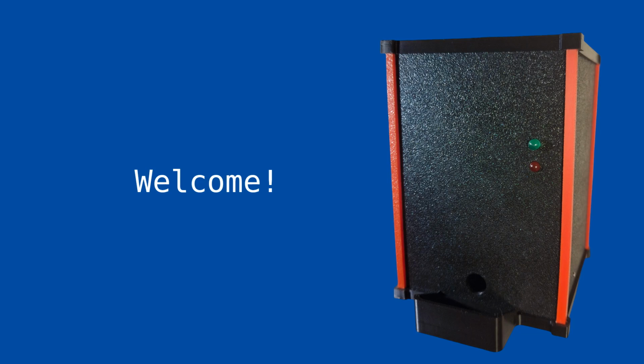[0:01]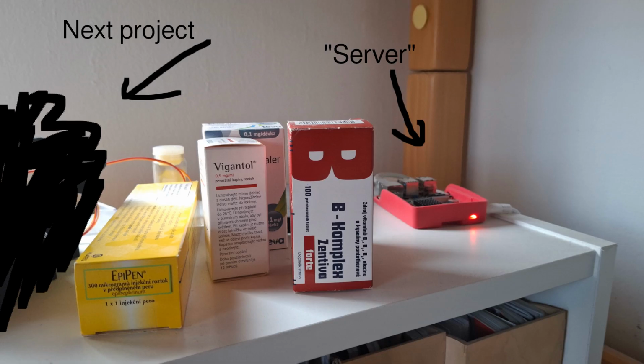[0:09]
Welcome. As you could see from the thumbnail, today I would like to share a story about how I built a pill dispenser. The idea for this project came to me while I was cleaning the shelves next to my
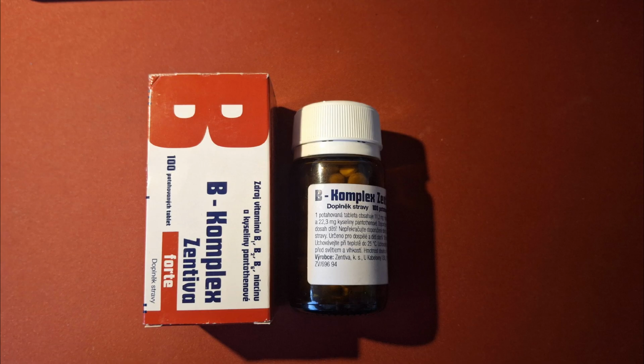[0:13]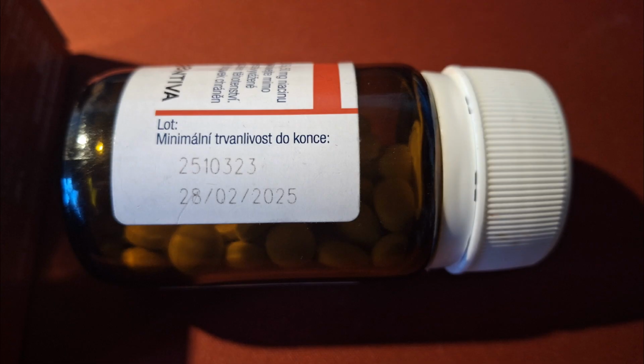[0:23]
desk. On one of the shelves, there has been a bottle of vitamins sitting there for a long time. Vitamins I was supposed to be taking every day for the last 2 years. Now, if you are wondering whether I have actually been taking them, the answer is no. They are out of my sight, so I always forget. So, by making this, I could keep them in view and within easy reach.
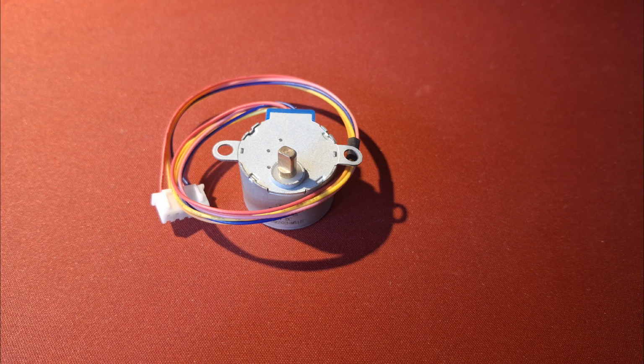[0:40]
First, I had to come up with some constraints. This was meant to be just a prototype, a fun weekend project. For now, I'm using a 28BYJ-48 stepper motor, but for the second version I bought a different motor.
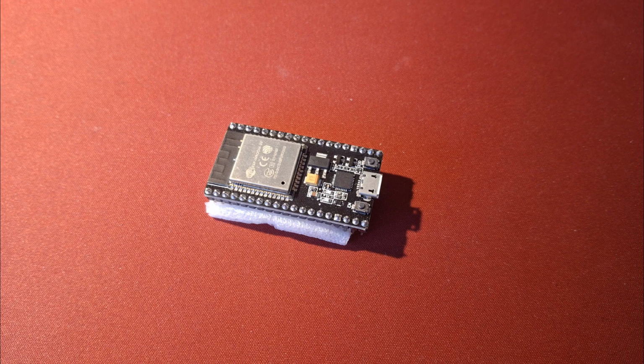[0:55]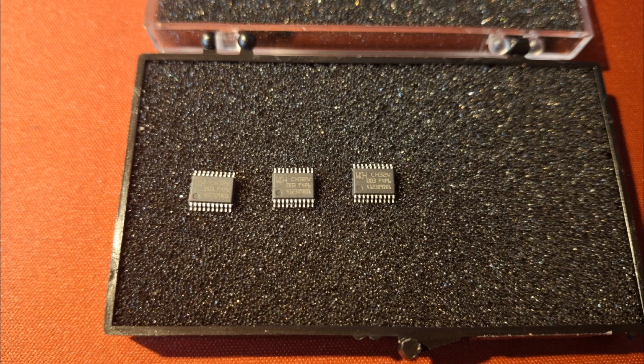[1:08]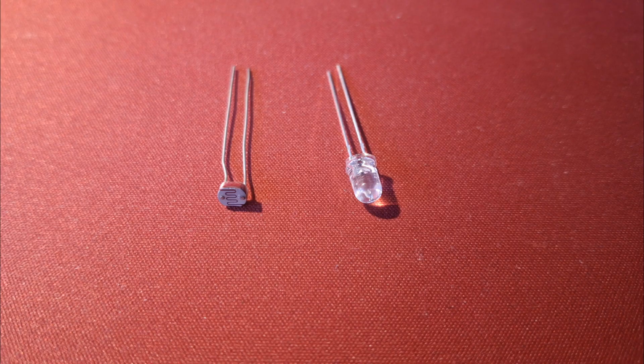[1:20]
Next on the list was choosing an MCU. Sure, I could use an ESP and make it smart, but do I need to? A pill dispenser with Wi-Fi? Seems like overkill. It would just waste power for no real benefit. So I chose the CH32V003. It's a kinda new, famous MCU based on RISC-V, and I have been waiting to try it for a while. There weren't many other requirements, I just wanted to use a photodiode to sense when the pill was dispensed.
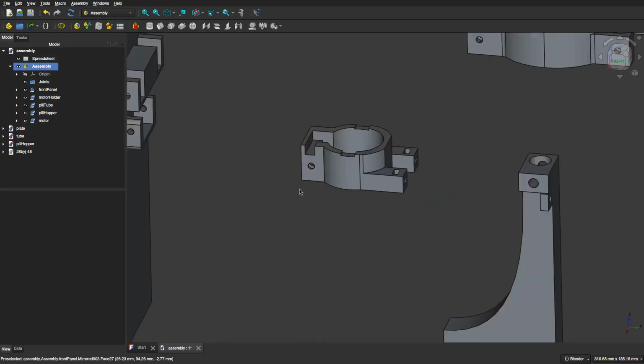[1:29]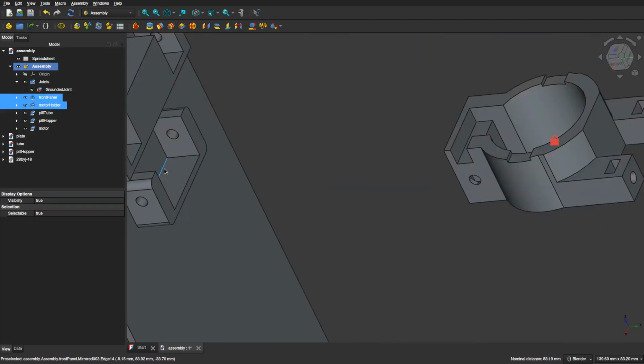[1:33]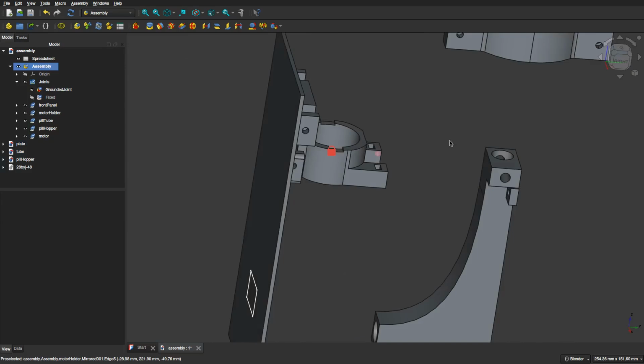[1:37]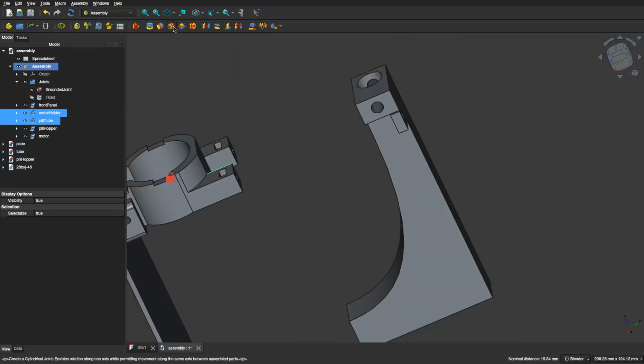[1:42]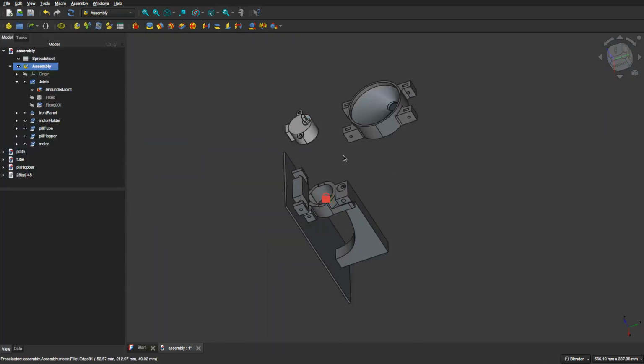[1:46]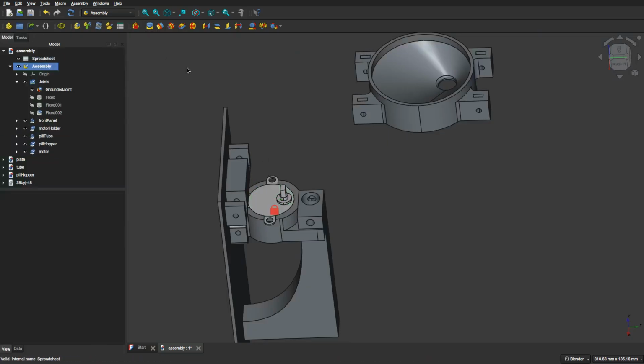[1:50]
As always, I use FreeCAD, but this time I decided to use assembly while modeling. Before, I just positioned all my parts based on spreadsheet values, but this time I wanted to do it better. After some research, I landed on using FreeCAD's built-in assembly. After a bit of practice, I got the hang of it, but it was very frustrating to use.
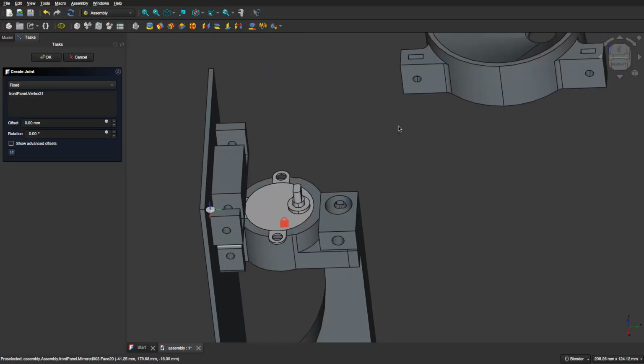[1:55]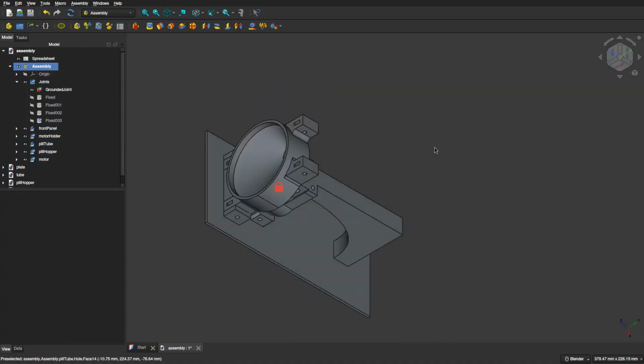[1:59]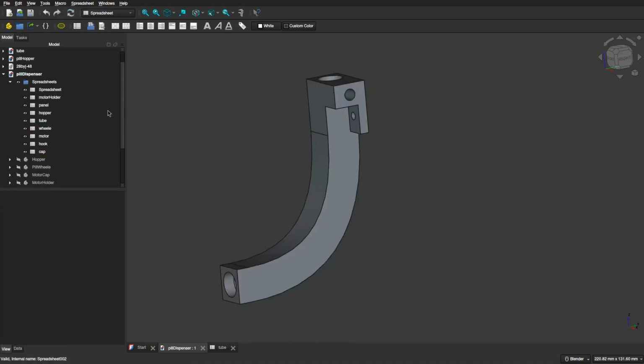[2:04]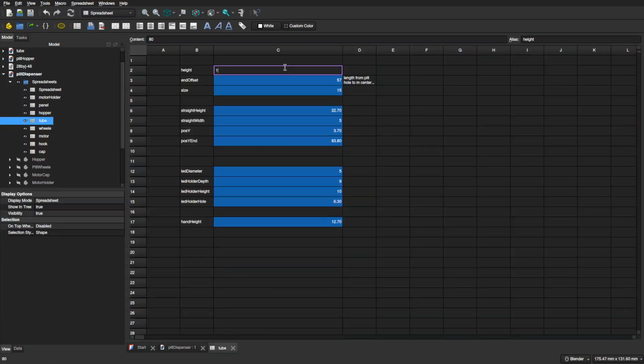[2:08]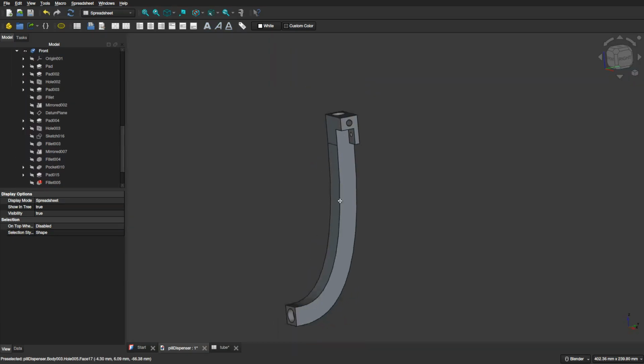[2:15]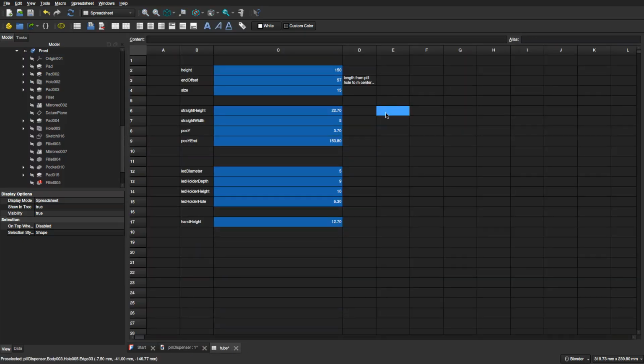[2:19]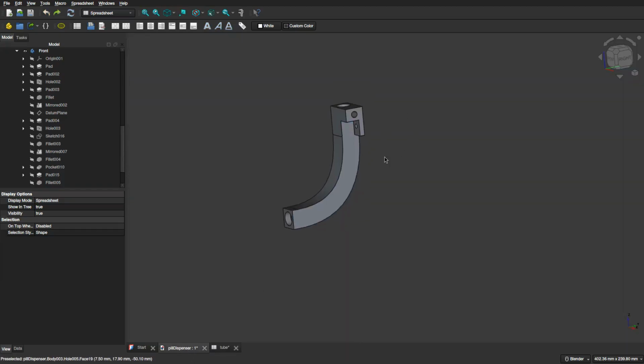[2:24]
Sometimes it just crashed and a few times it crashed horribly, so badly that the project file got corrupted and I had to go back and use backups. There is a high probability that I was using it wrong, but in the end I figured that I still like having all parts controlled by spreadsheets much more. And even when the project gets bigger and slower, I still like this way much more. I would like to try assembly again somewhere in the future, but for now this is more than perfect.
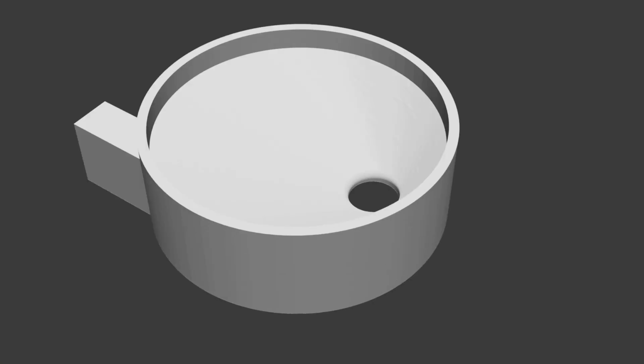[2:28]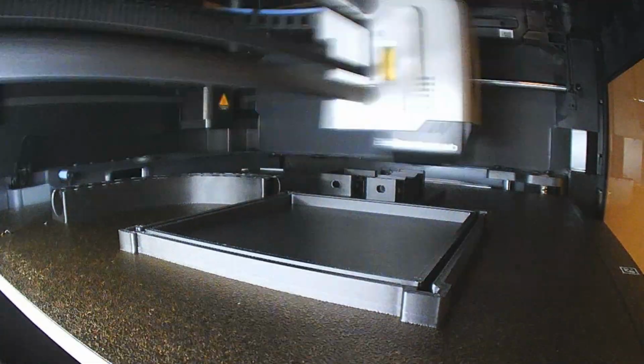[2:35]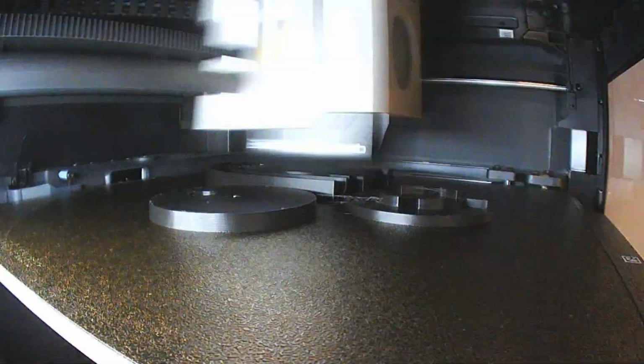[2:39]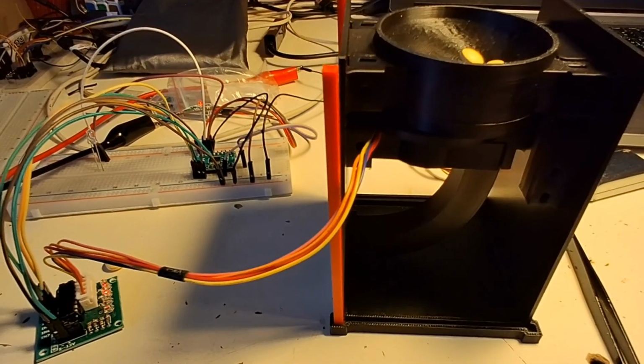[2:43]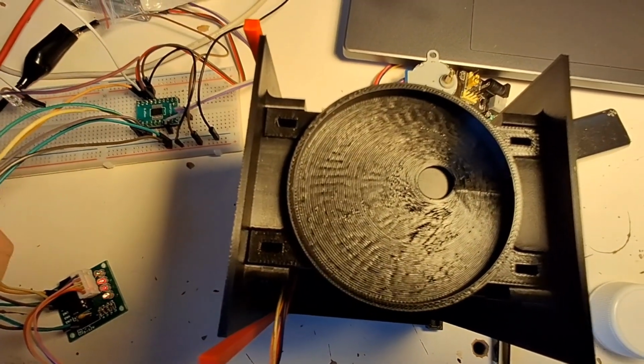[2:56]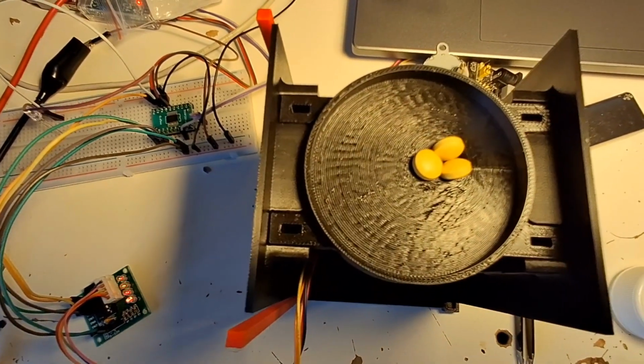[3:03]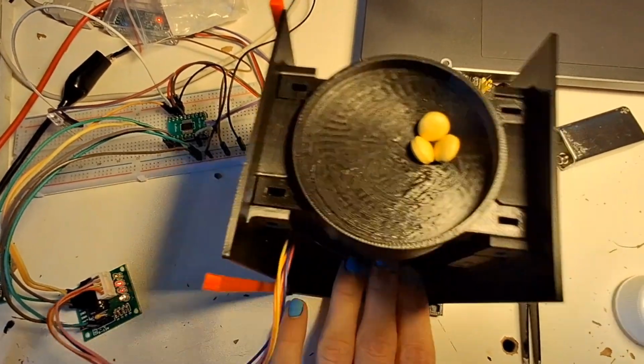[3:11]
Next, I had to print all parts, assemble them, and write some code so I could test the first prototype. Everything went smoothly until my biggest concern became a reality. When I placed more pills in the hopper, it got stuck. Additionally, the pill wheel only had one hole, and I realized that adding more holes would allow it to dispense pills much more quickly.
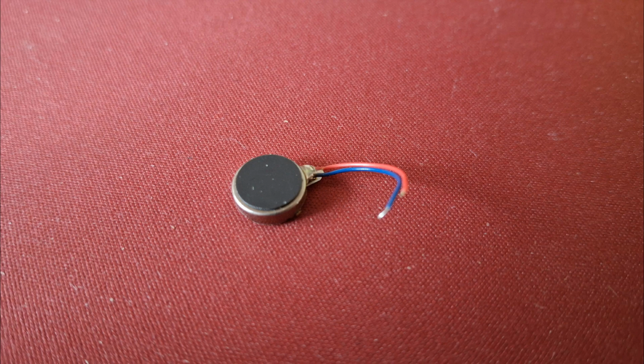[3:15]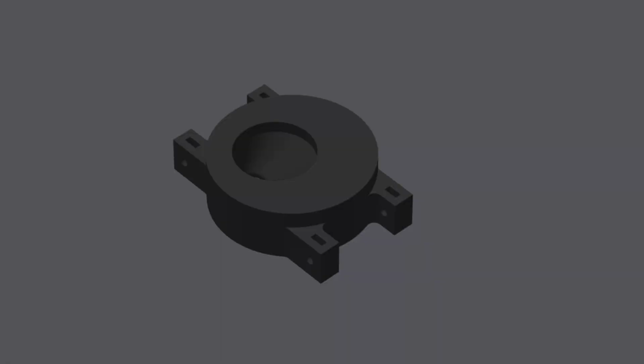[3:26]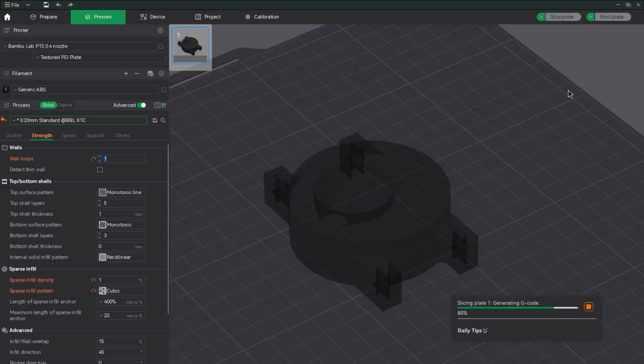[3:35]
One of the options that I had is to put a small vibrating motor in the hopper that could prevent the pills clogging. The other mechanical solution was just to make the hopper better. So I tried to test the idea of having a hopper with a much steeper edge, so I made this abomination. I sliced it with the lowest possible infill and walls and printed it.
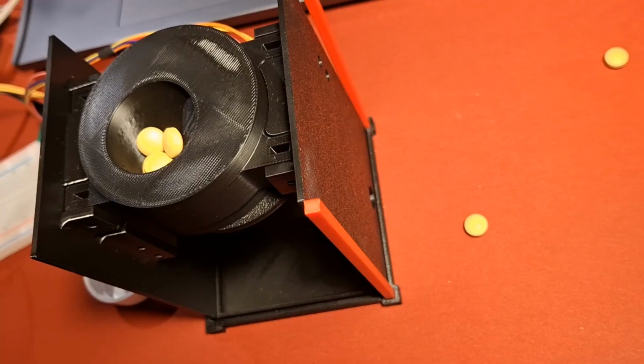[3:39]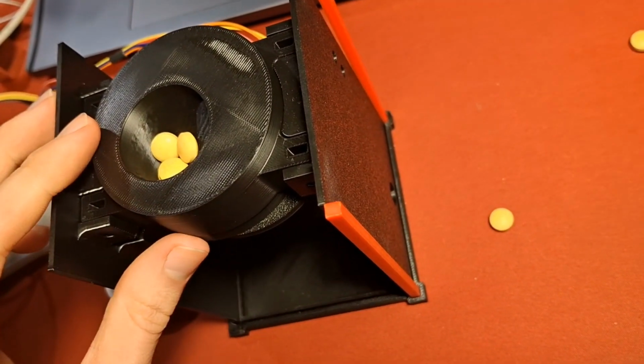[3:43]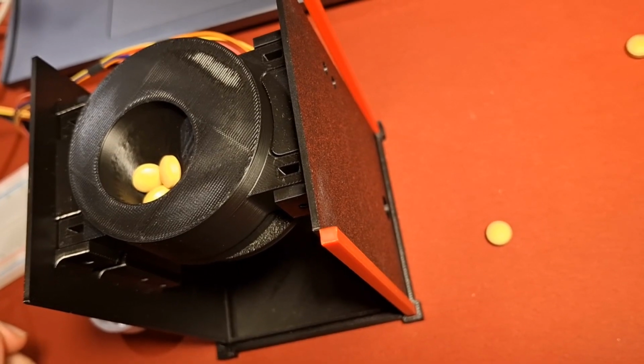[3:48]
Unfortunately, this still had pills clogging up. Looking around, usually other working hoppers are much taller and also have a much taller converging path, so I left the idea of using a real hopper.
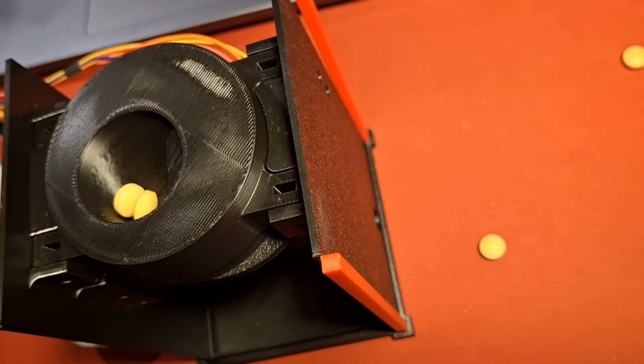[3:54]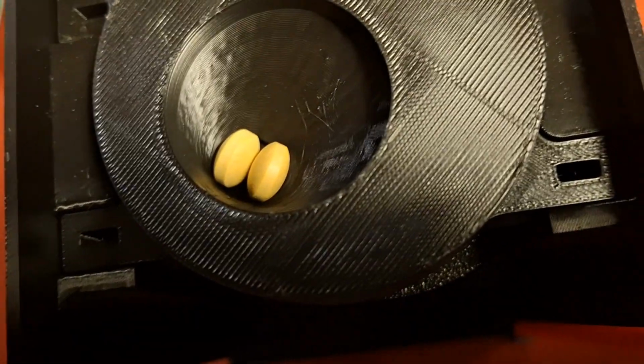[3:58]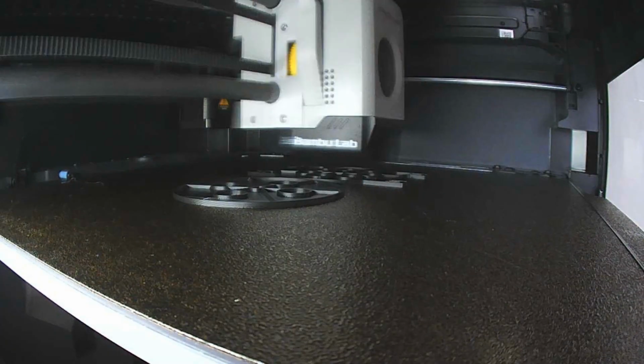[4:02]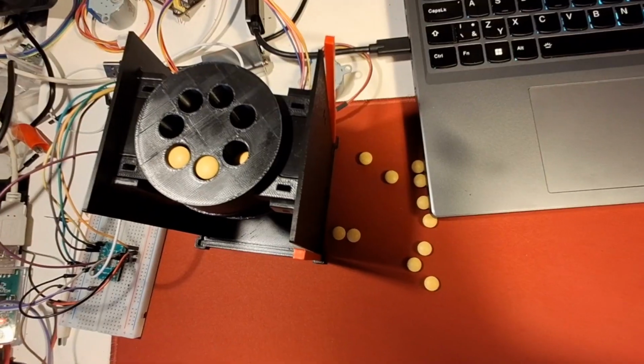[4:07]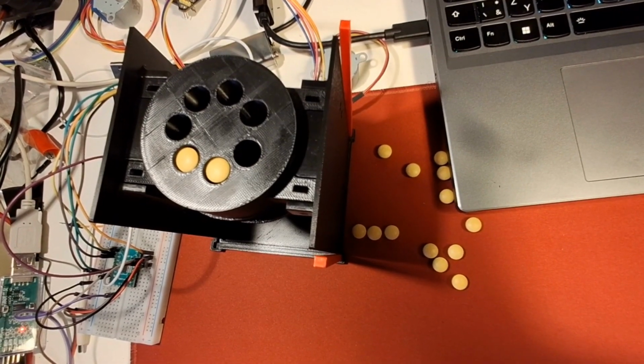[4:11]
Another mechanical solution was just to make holes for the vitamins where they will be stacked on each other. This solution turned out to be much better than I expected, but I was still a little bit disappointed that it's not a real hopper.
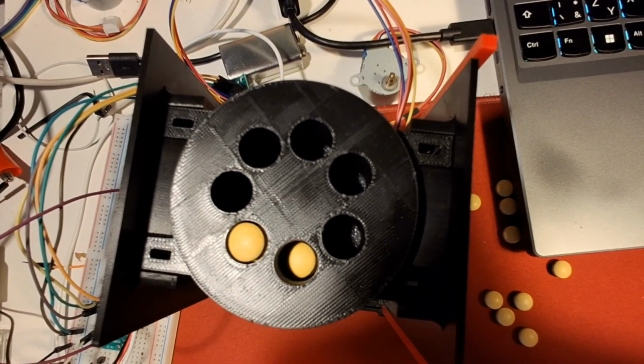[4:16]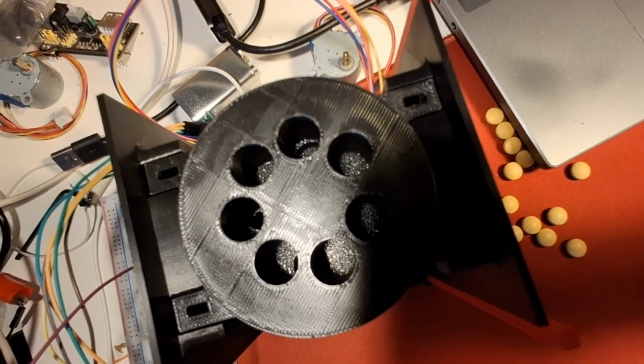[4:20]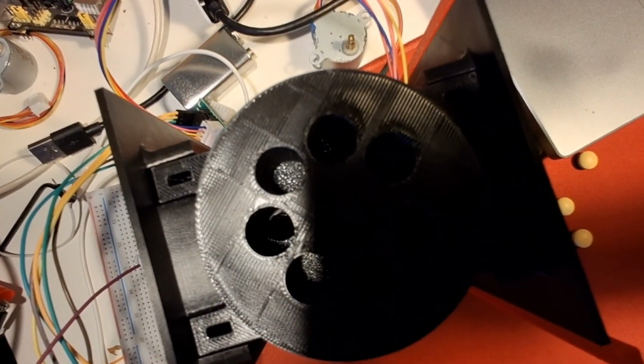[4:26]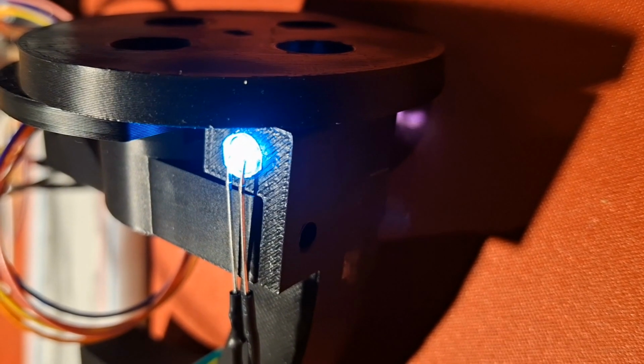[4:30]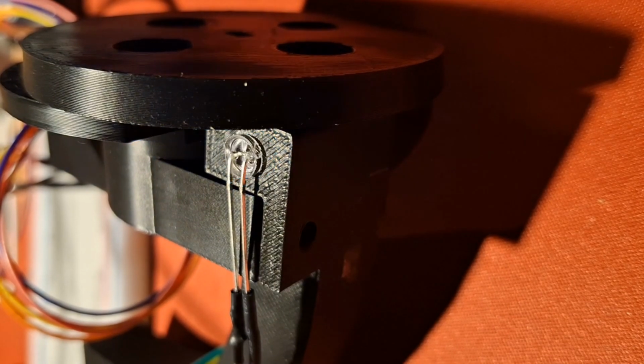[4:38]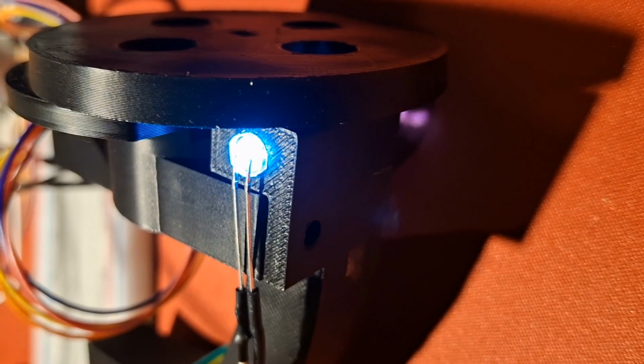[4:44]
The next step was to ensure that only one vitamin could be dispensed at a time. A pill was considered dispensed when it fell and interrupted the beam of light hitting the photodiode. The one little problem was that for monitoring changes in the photodiode's readings, I needed to have much better code.
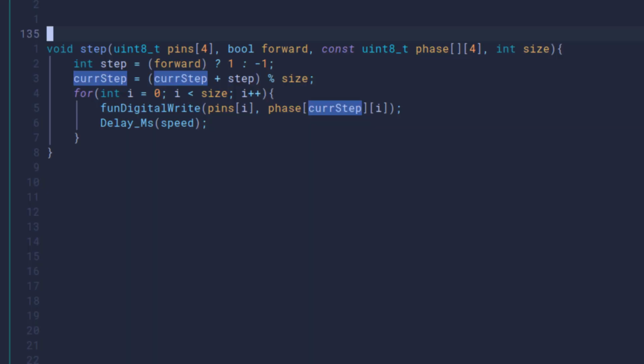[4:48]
The horrifying way I have been controlling the stepper motor did not allow me to detect the change on the photosensor, because one motor step was just looped with sleep. While using sleep, I was wasting a lot of time when the MCU could be doing something better. The correct solution would be just to use hardware timers.
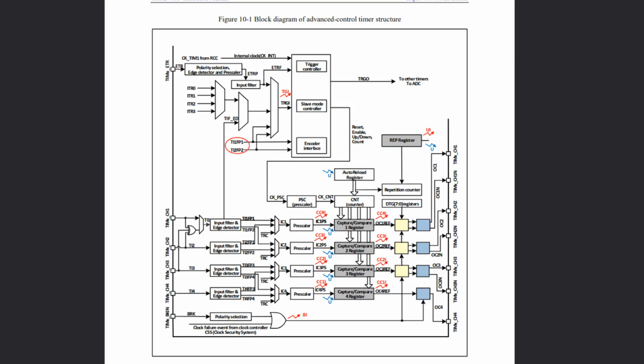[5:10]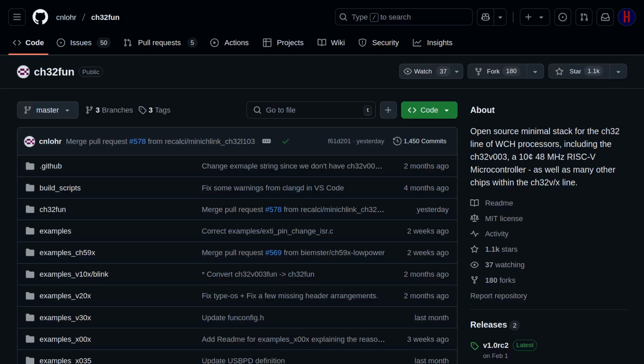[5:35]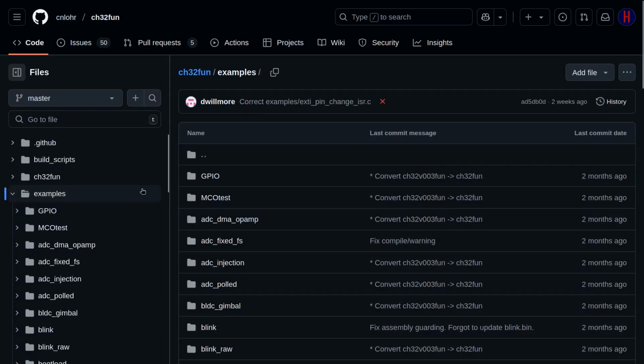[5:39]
Very simplified, a hardware timer is a specialized part of the circuit that is inside our MCU, and its sole purpose is to count clock signals. When the current clock count reaches a certain value, it does something, such as triggering an interrupt that will run our predefined function. Because this was the first time using this MCU, I had zero experience how to make it work. Also, unfortunately, in the MCU examples, I could not find any code example for how to use the timer the way I wanted to.
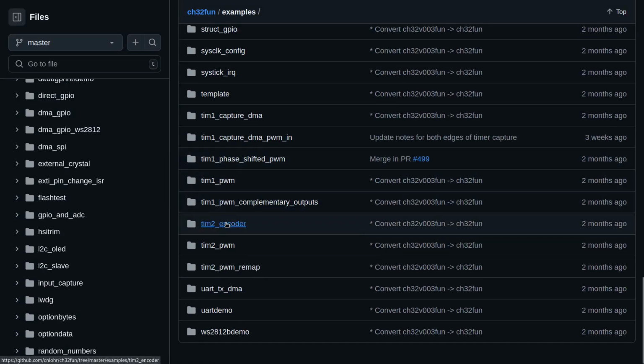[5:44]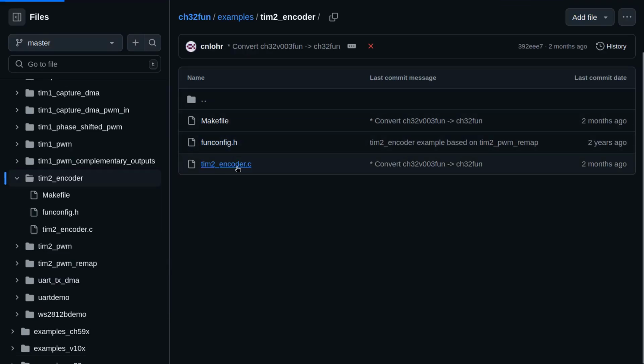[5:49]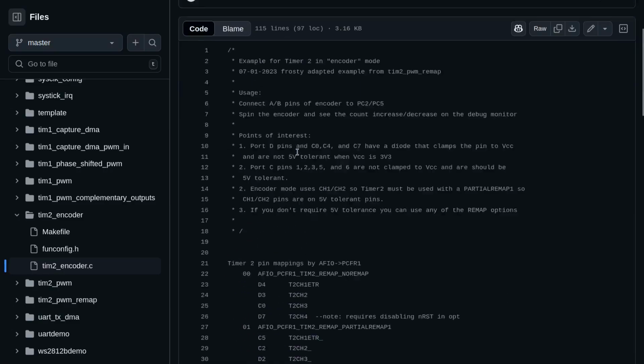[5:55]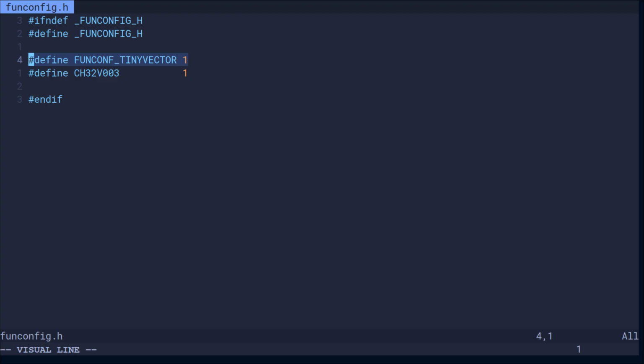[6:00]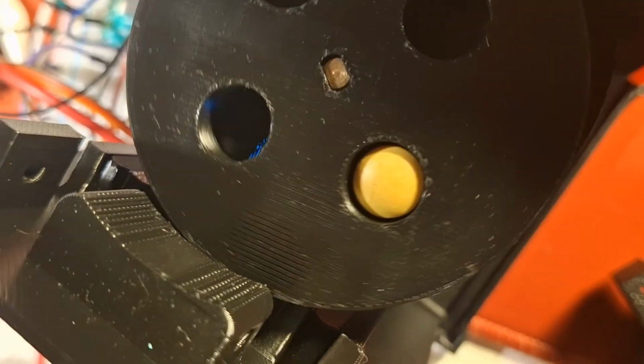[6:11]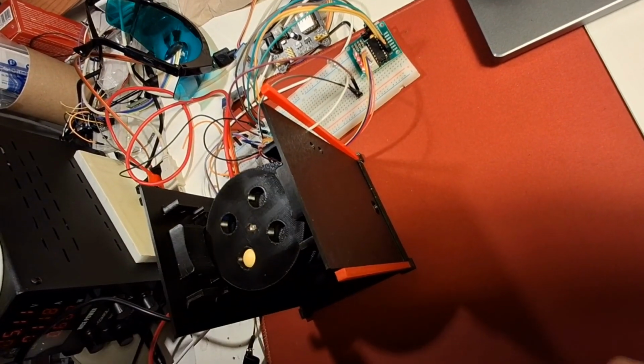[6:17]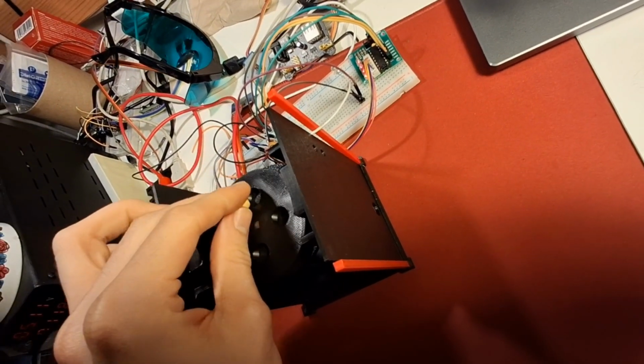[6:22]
So after a lot of hours of trying different timer settings and reading the docs, it still didn't work. But one weird thing was that I could not make any timers work in this project, even when the same code worked in different example projects. Then I got the idea to look into the config file, and there it was. For some reason there was a setting which disabled any use of interrupts. So, after changing that, timers were finally working. Next time I will make sure to first check the settings and only after that try something else. But in the end I was happy that it was finally working.
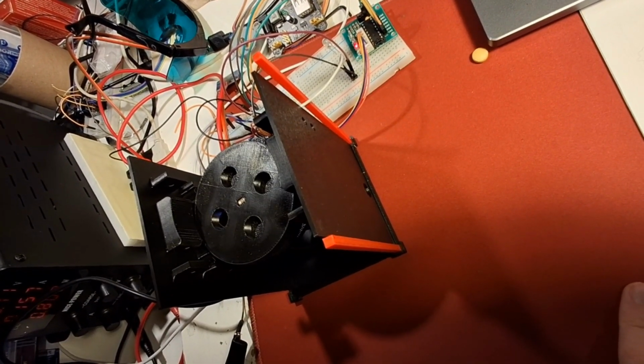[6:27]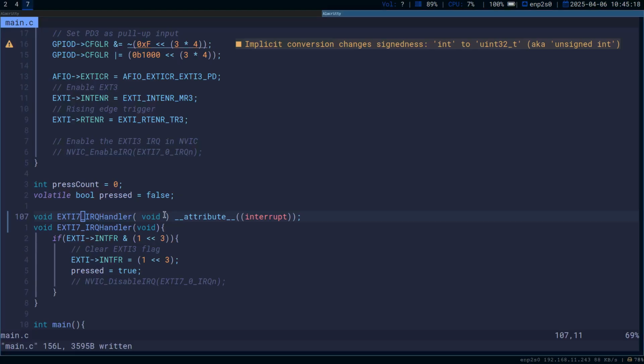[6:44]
Next fun stuff was to make the touch sensor work. Again, I wanted to use interrupts because that was the correct way to do it. And in the process I made it kinda detect the touch, and when I say detect I mean to make it crash when I touch the touch sensor. So after debugging for a while I found that I had misspelled the interrupt function, and after fixing it everything worked.
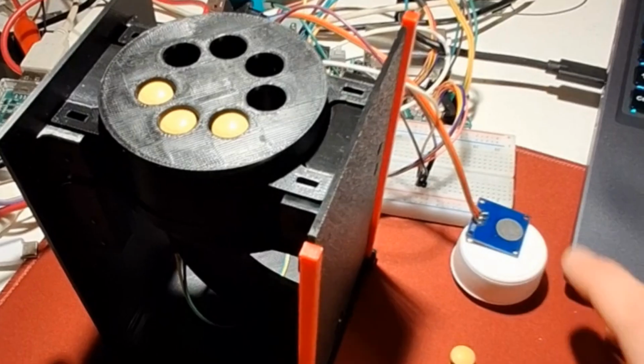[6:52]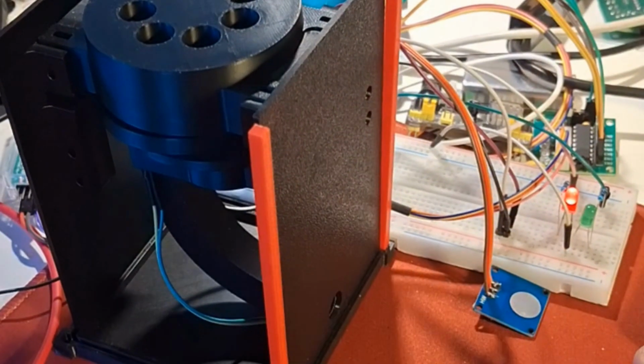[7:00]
I had also added two status LEDs. Green LED means dispensing, red means that the hopper has no more pills and it needs refill.
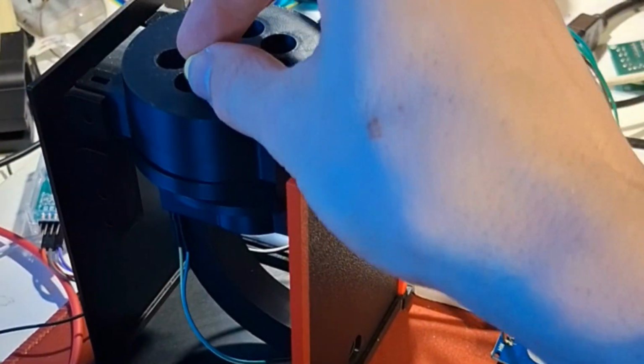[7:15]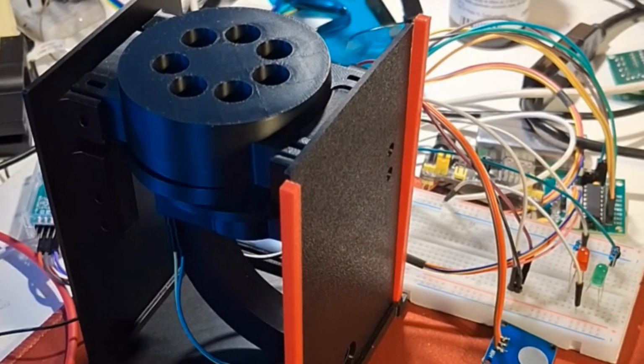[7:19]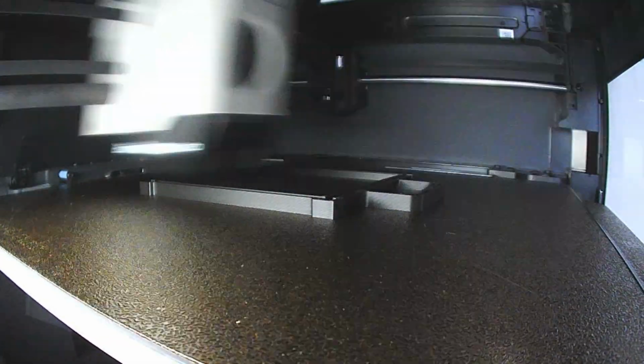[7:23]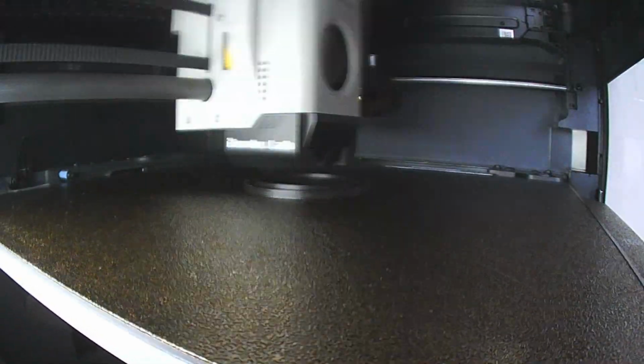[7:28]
Next I had to finalize the whole design. For example, add something that will keep the pills from falling down when dispensed, or a hole in the lid so I could easily fill it up.
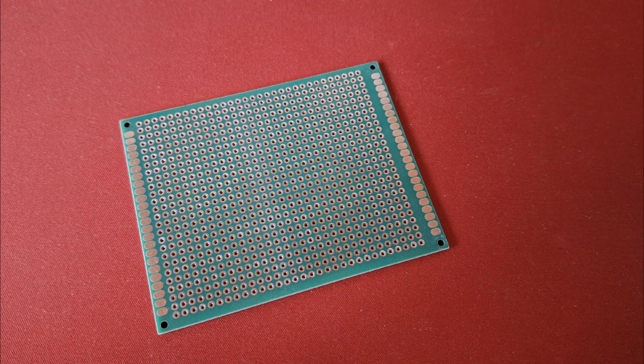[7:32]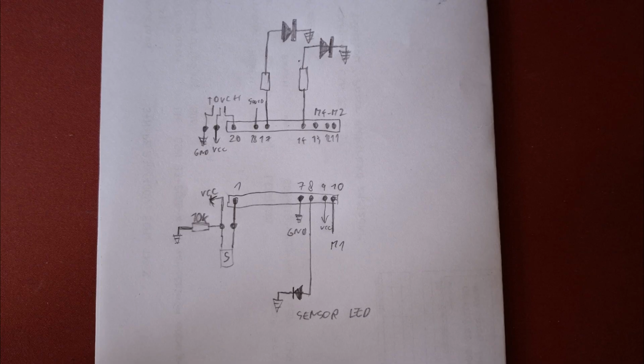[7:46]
The last task on my list seemed like the easiest, but it turned out to be the hardest and most frustrating. I couldn't use my CNC, I didn't want to order a PCB, so I had to solder everything onto a universal prototype board. The first issue came when I copied the schematic from my breadboard. On the schematic I connected a resistor to the wrong leg of the photodiode, which cost me nearly a whole day of debugging. I kept measuring voltages and swapping photodiodes until I finally rebuilt the circuit from scratch and found the mistake.
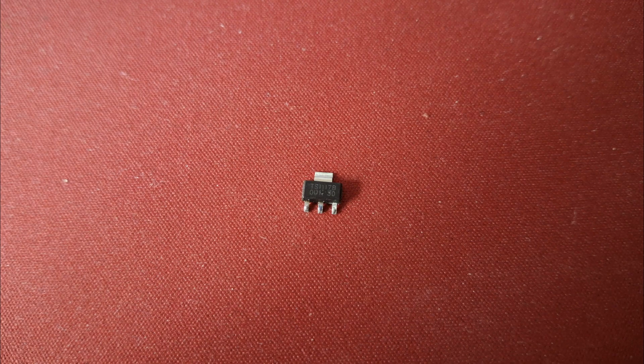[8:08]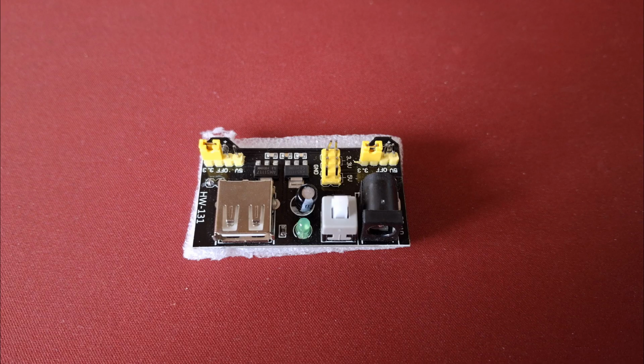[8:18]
Then I likely damaged the voltage regulator or created a solder bridge under it, and when I powered the board, the MCU released the magic smoke and died. Not wanting to waste more time, I removed the small SOT223 and used a breadboard friendly power regulator instead.
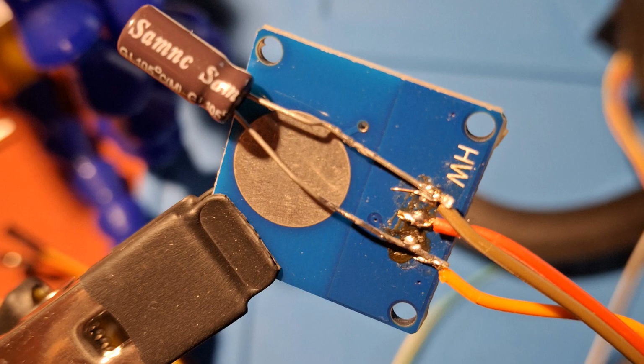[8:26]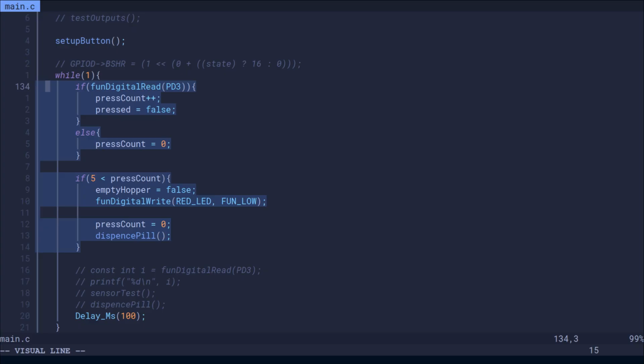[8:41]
After fixing that, the touch sensor was giving false positives. The problem was probably power noise, since it worked fine when the MCU was powered through the programmer. Adding a capacitor helped a bit, but it still wasn't reliable. The final fix was to remove the interrupt and only register a press if the sensor stayed active for over half a second. That worked perfectly.
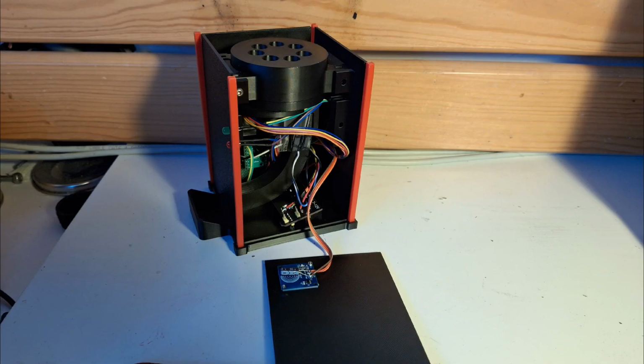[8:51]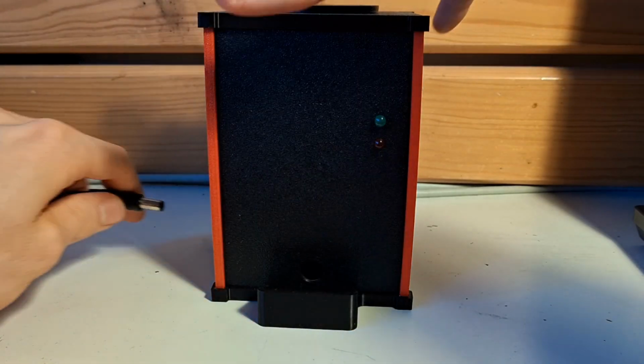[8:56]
This is how it looks inside. And here is some rare footage of it actually working all together.
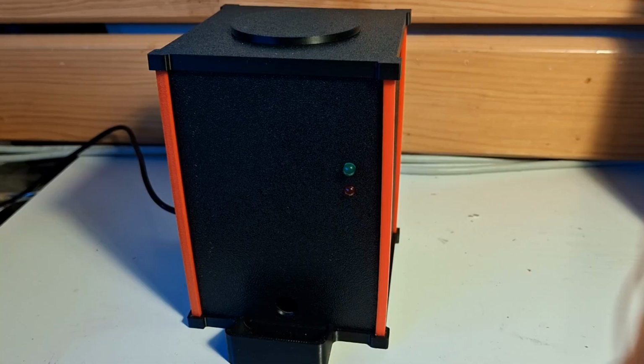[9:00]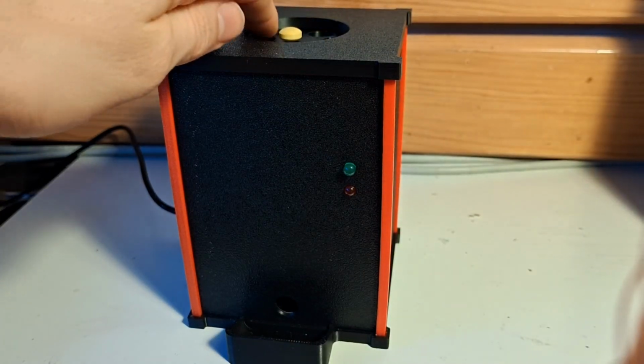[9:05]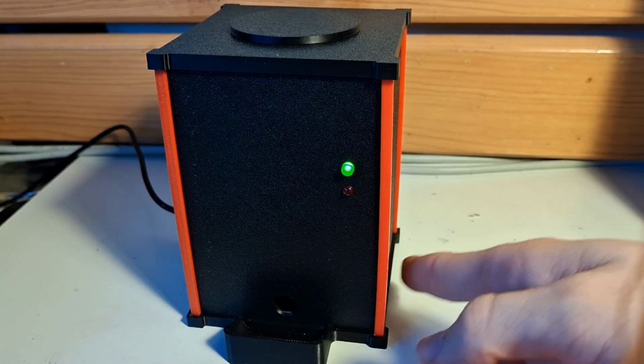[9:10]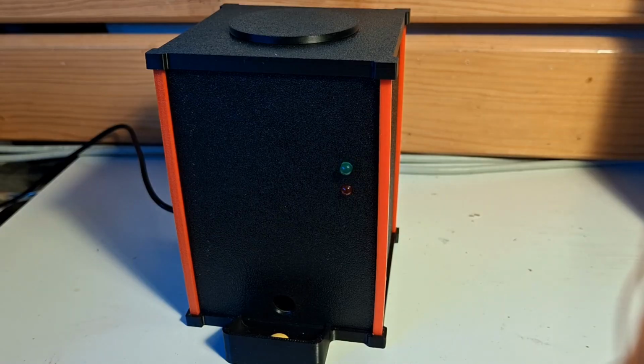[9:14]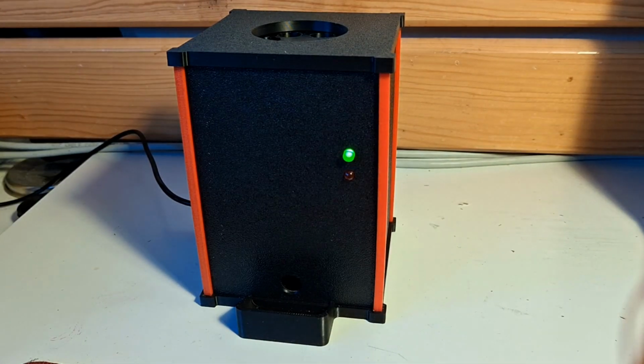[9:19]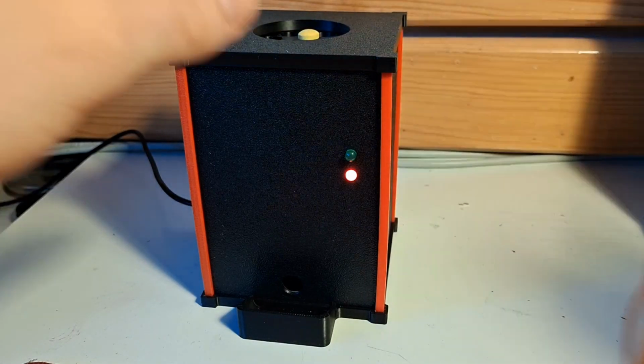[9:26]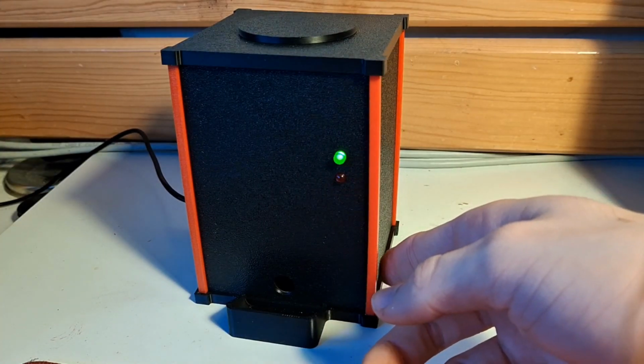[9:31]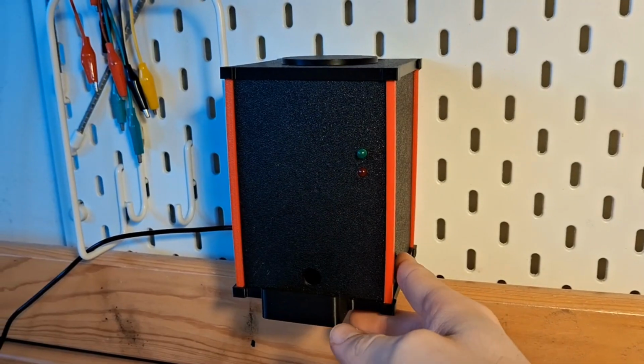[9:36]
Well, in the end I am happy how it turned out, but I am still planning on making version 2.